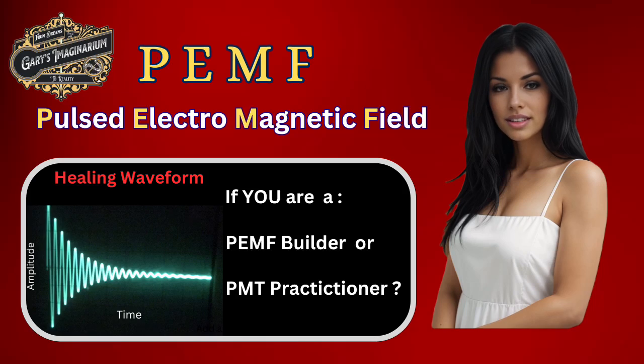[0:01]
As this banner suggests, whether you're a PMT practitioner or a builder of pulsed electromagnetic field or PEMF devices, this video will take you through our discovery of the healing waveform and how you can ensure your PEMF devices are emitting it.
For newcomers to PEMF, I'll briefly define it before we go into how we discovered the healing waveform. Additionally, we'll take you through the building of a PEMF device and share the results of our testing.
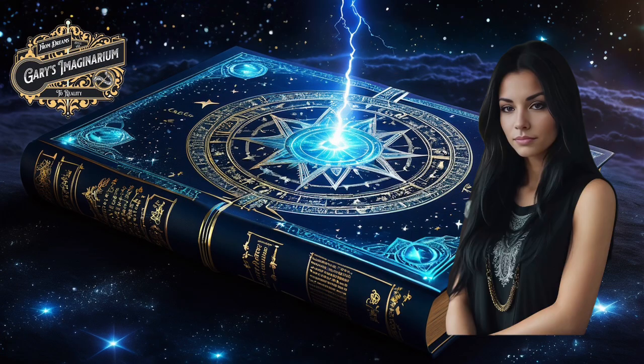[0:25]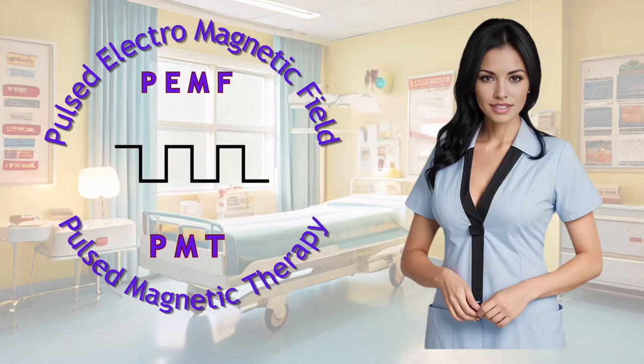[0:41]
Today's topic is PEMF or Pulsed Electromagnetic Field Devices. A PEMF device is used in Pulse Magnetic Therapy or PMT. It's a non-invasive and drug-free treatment that has been used for various health conditions. PMT works by delivering pulsating magnetic fields to the body, which replenishes depleted cellular energy to promote healing.
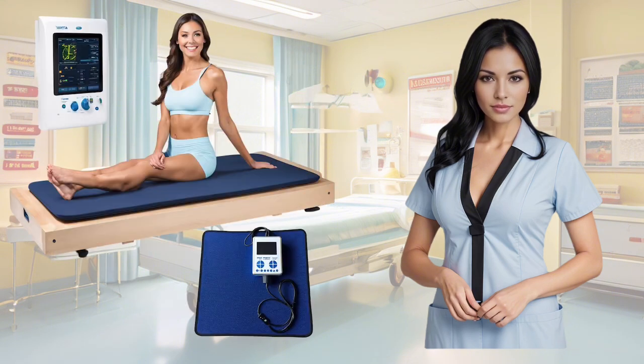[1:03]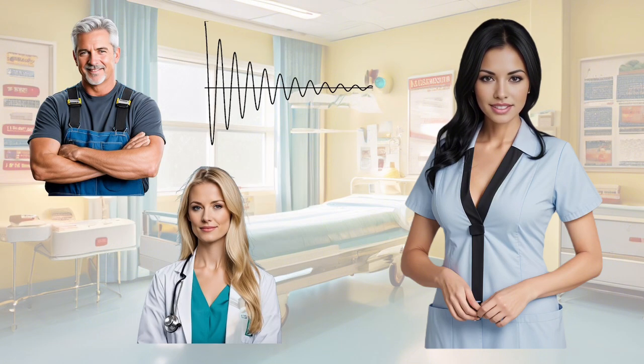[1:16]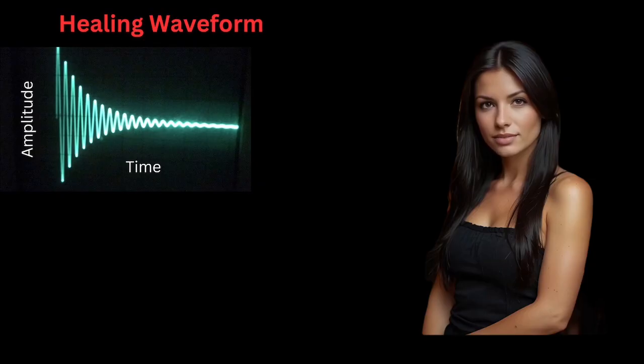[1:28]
A typical PEMF device features a mat or blanket embedded with coils which is placed on the body. The control device administers pulsating power to these coils, generating a magnetic field that penetrates into the body. Whether you are a professional PEMF therapist seeing patients or a layman building their own, it becomes crucial to stress the importance of ensuring that your device emits the correct healing waveform. Here is how we discovered the healing waveform.
Gary's friend Bob, an experienced operator of a professional PEMF device, has been using it to successfully treat people and animals for many years. Recently, he received a call from his colleague Ron, who also operates a similar device, reporting that his patients were feeling unwell after treatments. Upon learning of this, Gary suggested to Bob that we compare the waveform emitted by his device with Ron's.
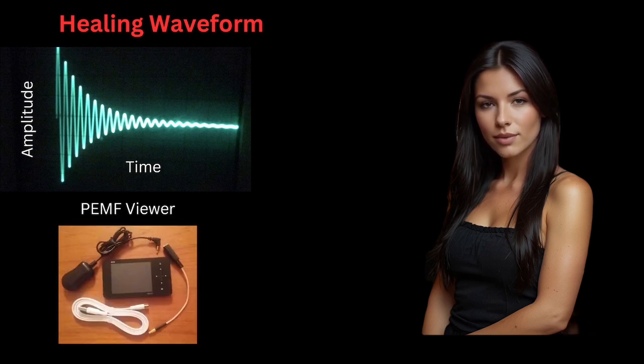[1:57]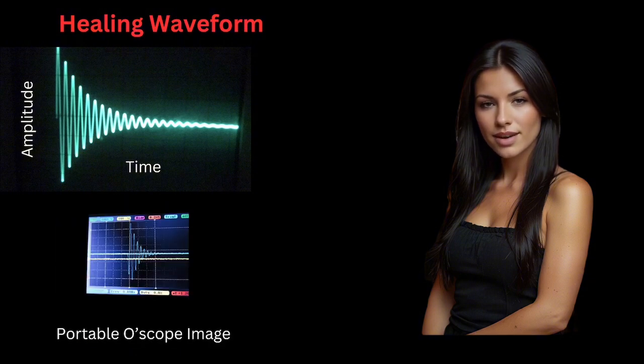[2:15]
To achieve this, Gary assembled a PEMF viewer, which is basically a pickup coil and a portable oscilloscope, enabling Bob and Ron to monitor both waveforms. Bob positioned a pickup coil connected to the oscilloscope near one of his active coils and captured an image of the generated waveform. This is the image it captured.
After Bob sent the viewer to Ron for conducting a similar test, Ron confirmed that his device was not generating the same waveform. As a result, Ron returned his device to the factory for repairs. We did get a confirmation on the waveform that Ron's machine was emitting. I will show you that later when I show you the test results of the PEMF device we built.
The pickup coil that Gary used for testing was part of a package called the cell sensor, and he originally purchased it from Amazon. We were going to provide a link below so you could purchase the cell sensor, but Amazon no longer sells it. However, at the time of this video, it is still available on eBay. Here is what the package looks like.
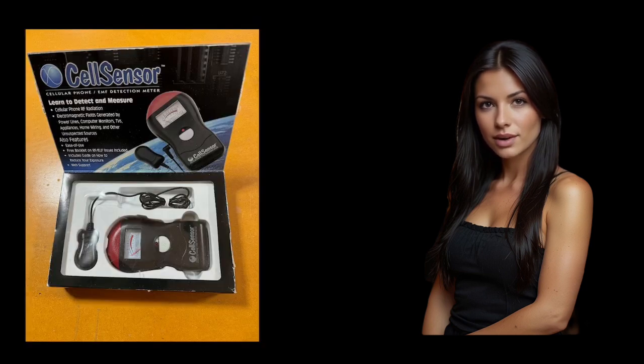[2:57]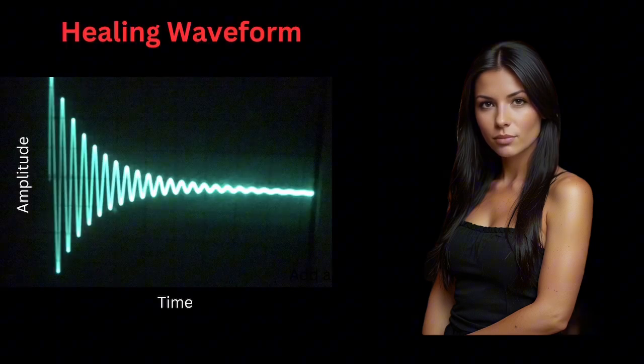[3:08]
To view the waveform generated by your PEMF device, simply connect the pickup coil to an oscilloscope and position it near one of your coils while it's operating. The healing waveform is characterized as a damped wave. This damped wave occurs when a magnetic field within a coil collapses once the power is deactivated. This collapse generates a back electromotive force, EMF, inducing a current in the coil in the opposite direction.
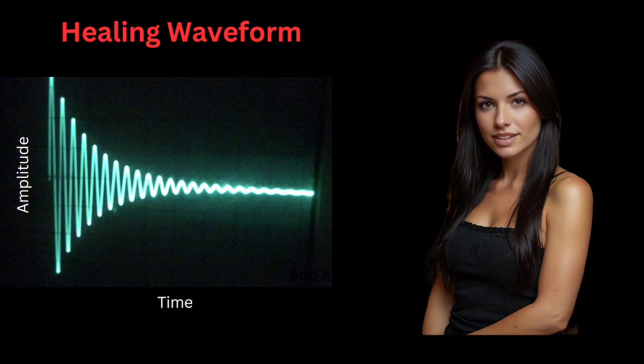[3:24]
This current in turn creates another magnetic field with opposite polarity, which also collapses. This process repeats until all the energy is dissipated and the waveform zeroes out. Note that while the fields are collapsing, the poles of the magnetic fields are also changing.
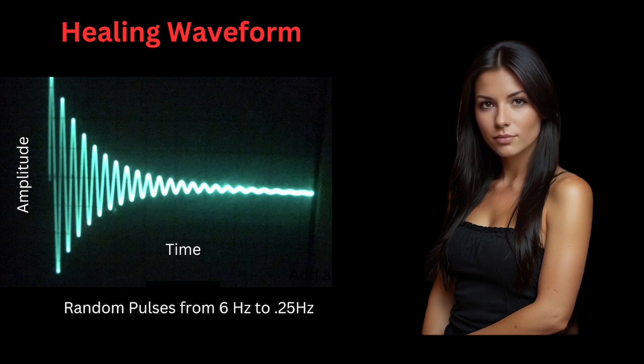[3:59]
Another analogy to consider is likening it to the ringing of a bell. When a bell is struck swiftly, it produces a sustained sound that gradually fades as the energy diminishes. If we were to examine the audio waveform emitted by the bell and the healing waveform, they would appear identical. This may be the reason this is a healing waveform, because the body is receiving rapidly changing magnetic fields with opposite polarity.
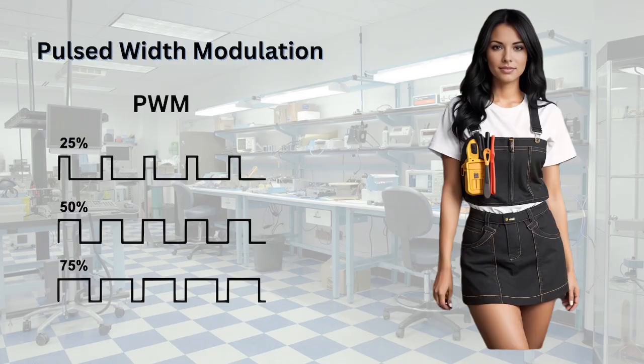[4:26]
It should also be noted here that the frequency of the pulses in the professional PEMF device is set to produce random pulses between 6.0 cycles per second, hertz, and 0.25 hertz. This prevents the body from getting used to a steady pulse, which makes the body's reaction more effective. It is important, before we go any further, to explain pulsed width modulation, or PWM.
PWM is a method used in electronics to control the amount of power delivered to a device by varying the width of pulses in percent in a periodic signal. It's commonly used in applications such as motor speed control and dimming lights.
In the analog days, if we wanted to dim a light bulb, we put a resistor in between the bulb and power source. The resistor had to be rather large to be able to dissipate all the heat that was generated. Using PWM, there is no heat generated, and no need for a resistor, because we are only turning on the light in momentary pulses the eyes can't perceive.
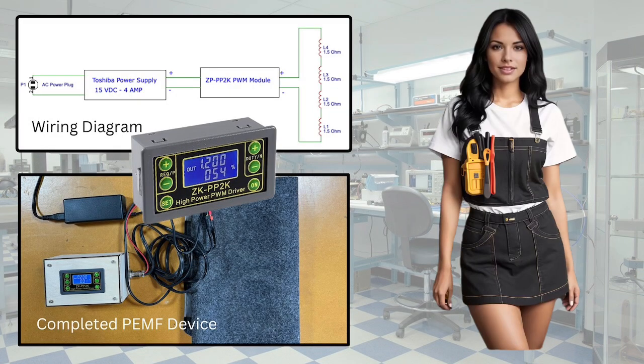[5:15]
Now let's have some fun and build a PEMF device. Since Gary has been experiencing back problems this spring, we can use the device on him and also do some testing. There are many YouTube tutorials available that explain how to build simple PEMF devices. One of these tutorials demonstrates building a PEMF device using a ZK-PP2K module. We will provide a link below to purchase the ZK module. Here is the wiring diagram and a picture of the unit we completed.
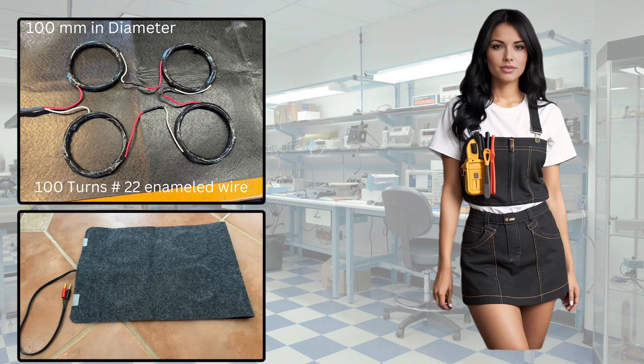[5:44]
The completed unit consists of the ZK pulse width modulator signal generator, a used 16-volt laptop power supply, and a 4-coil mat which we built. It is a good idea to save all those old power supplies. For the 4-coil mat, we wound the coils and taped them onto a mat as shown. Each coil measures approximately 100mm in diameter and comprises around 100 turns of number 22 gauge enamel coated copper wire. We mark the coil's inner and outer windings with red and white wires. Then when connected in series like a battery pack, it will ensure that the top side of each coil will have the same magnetic polarity.
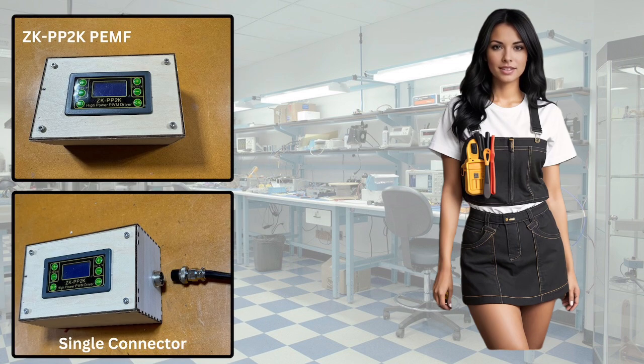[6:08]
Gary utilised his laser engraver to fabricate the cool wooden box. We will be making videos on laser engraving adventures in the future. Note that the same connector is used for both the power input and the pulse output wiring to the coils. This enables us to connect the mat and power supply to various PEMF devices in the future.
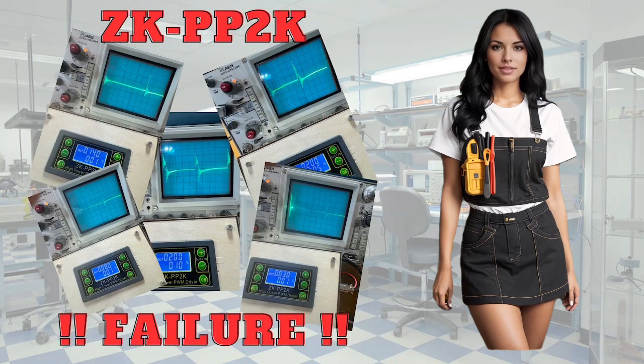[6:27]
We were really excited to use the ZK module PEMF device after the long building process, but our excitement quickly turned into disappointment when we began testing it to verify whether or not it was producing the healing waveform. We were really glad we tested it before putting it to use. After extensive testing involving various frequencies and PWM percentages, we successfully achieved the healing waveform using the ZK module, but only at one specific setting.
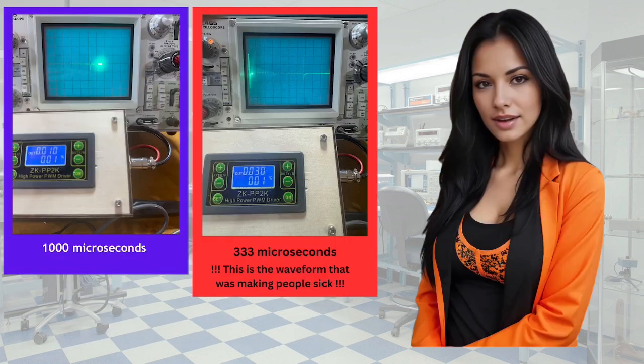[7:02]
We will highlight key findings you should be concerned with, including Ron's waveform that was making people sick. For more detailed test results, please visit our website. I am going to show you our test result images from the oscilloscope and ZK module, two at a time. The really important measurement is the width of the pulse that the ZK module is emitting. I am going to show the pulse width under each image.
The first set of tests we did were at 1% PWM and the frequency between 10 and 200 Hz. Pulse width will be shown in microseconds. The left one shows 10 Hz, 1%. Pulse width of 1000 microseconds. Not much going on. Maybe oversaturating the coils. The right one is 30 Hz, 1%. Pulse width, 333.33 microseconds. Be aware that this was the waveform that was making Ron's patients sick.
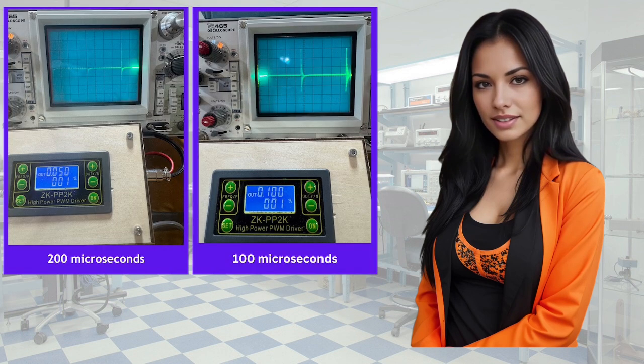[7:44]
The next is 50 Hz, 1%. Pulse width, 200 microseconds. As you can clearly see, far from our healing waveform. The second is 100 Hz, 1%. Pulse width, 100 microseconds. At 100 microseconds, the signal is not as strong because it dampens out quickly, but it is getting closer. As the pulse decreases in width, the signal is improved in its dampening time.
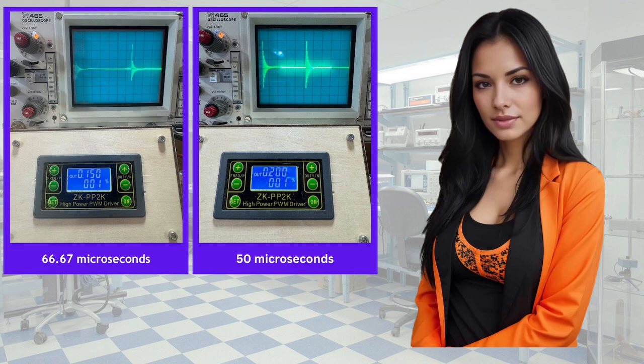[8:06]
The next is 150 Hz, 1%. Pulse width, 66.67 microseconds. Bottom is clipped, but we are getting closer. The second is 200 Hz, 1%. Pulse width, 50 microseconds. Yay! This is the healing waveform. For this set of coils, this is the correct pulse width for maximum amplitude and longest dampening time.
Strongest healing waveform at 10 volts peak to peak, and it has the widest dampening time of about 2 milliseconds. At this pulse width, it seems to be resonating the coil quickly at maximum amplitude.
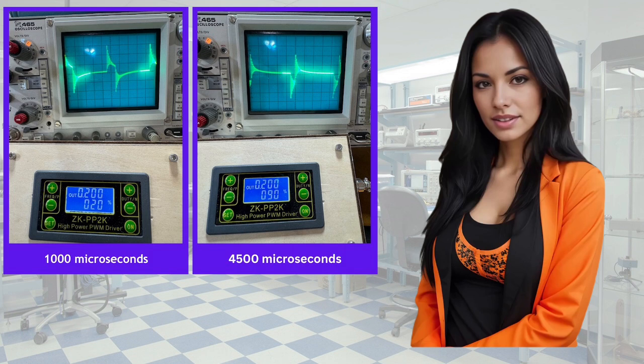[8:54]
Just to confirm that this was the resonant pulse width for the healing waveform, we made more measurements by keeping the frequency set at 200, but increased the pulse width up to 4,500 microseconds. The next is 200 Hz, 20% pulse width, 1,000 microseconds, or 1 millisecond. The coils are reacting to this pulse and speed.
Amplitude is about 10 volts peak to peak, but as you can see, the waveform is very distorted. The pulses are 5 milliseconds apart, and the pulse width is 1 millisecond. The pulse is longer, so the dampening effect may take longer. So this may be that the dampened wave is being interrupted with another pulse before it can go to zero. But it's hard to say. This could just be the reaction of the coils themselves not liking this frequency and pulse width.
The second is 200 Hz, 90%, pulse width 4,500 microseconds, or 4.5 milliseconds. At this pulse width, we are definitely not letting the waveform dampen out before hitting it with another pulse. At 4.5 milliseconds, it is still very distorted, and it has dropped to 8.5 volts peak to peak.
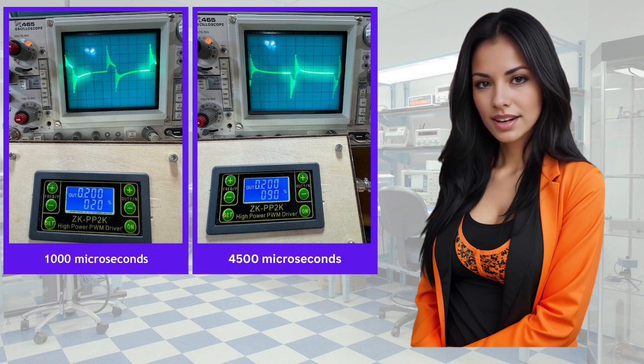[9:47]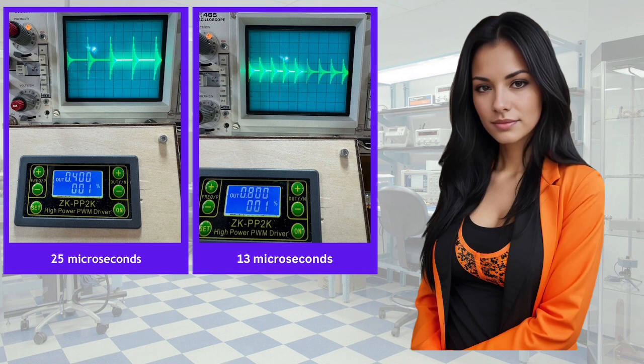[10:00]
For the next set of tests, we are setting the ZK module at 1% PWM, and then vary the frequency between 200 and 800 Hz, pulse widths from 50 microseconds to 13. The next is 400 Hz, 1% PWM, 25 microseconds. Remember, our best is at 50 microseconds, so we are now at half pulse width.
We still have the healing waveform, but the amplitude is less, down to 9 volts peak to peak. The next is 800 Hz, 1% PWM, 13 microseconds. We still have our healing waveform, but the amplitude is way down to 5 volts peak to peak. As we raise the frequency, the pulse width decreases, and the amplitude decreases.
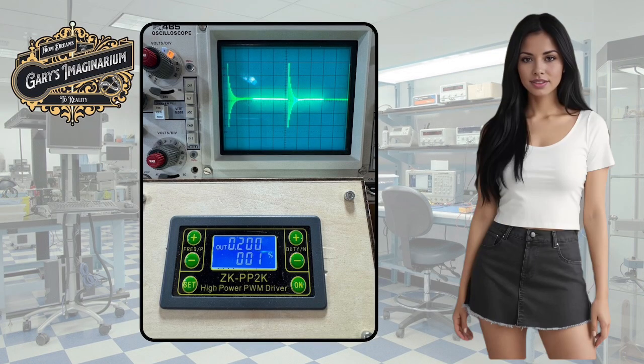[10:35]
After documenting these tests, the final finding is that our 4-coil mat achieves its best response with a 50 microsecond pulse, generating maximum Gauss and the desired damped wave necessary for an effective healing pulse. It's important to note that achieving perfect inductance in a coil is impossible due to inherent capacitance, which determines its resonance frequency. The 50 microsecond pulse seems to ping the coil at its resonance, like the fine tuning of a bell.
However, achieving this 50 microsecond pulse is only possible at 200 Hz when using the ZK module, and if we switched it to pulse mode, the shortest available pulse is 1 ms. Furthermore, as previously mentioned, optimal healing requires producing pulses randomly between 6 Hz and 0.25 Hz. Therefore, the ZKPP 2K module and its pulse width modulation are inadequate for ensuring the safe operation of a PEMF device. Consequently, we will need to incorporate a microprocessor like an Arduino to meet these specific requirements.
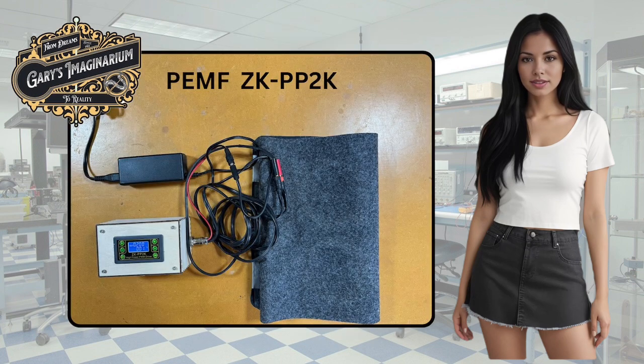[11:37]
Even though the test results indicated that the ZK module is not suitable as a PEMF device, we recommend building one yourself to discover the optimal resonance for your specific coil configuration. If you design it like we did with a single connector for both the power in and pulse wiring out, you can utilize the ZK module to determine the resonance of your coil set, and then integrate it into your final design by simply plugging it in. In the next video, we'll cover the building of a safe PEMF device utilizing an Arduino microcomputer, using the same mat and power supply.